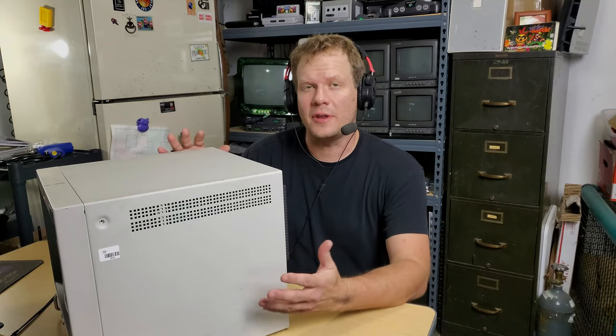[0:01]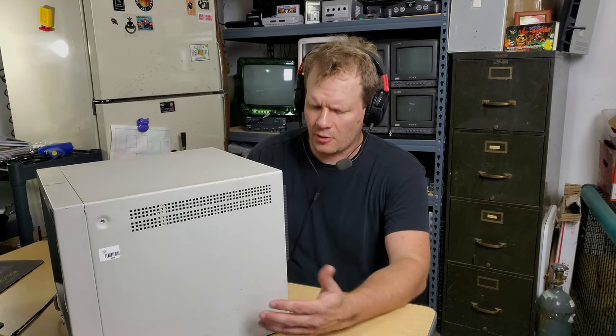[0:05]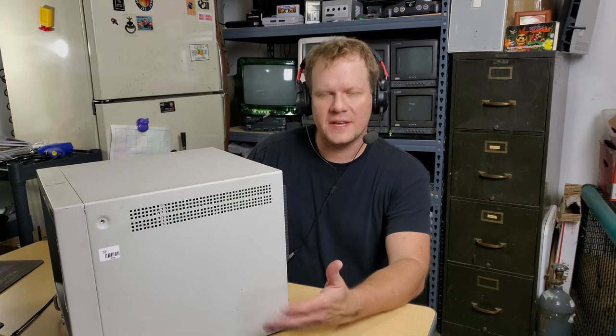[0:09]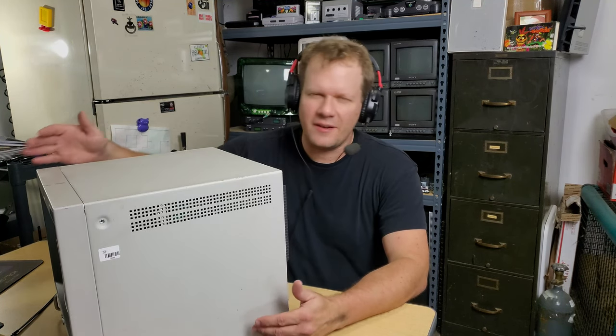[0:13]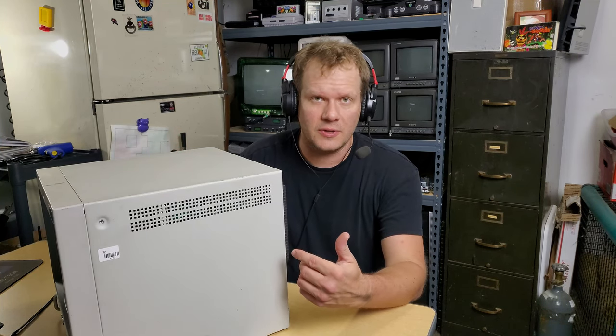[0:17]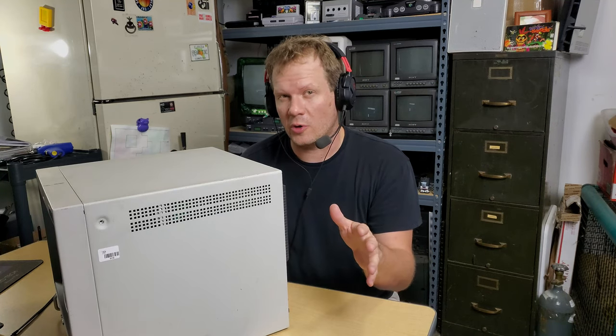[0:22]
This is a Sony PVM 1353 MDU unit, which is a medical monitor, and it is from the mid-90s, 1995, and it will not power on. So instead of just showing you that it won't power on, just take my word for it, because I'll show you how to troubleshoot this and how to hopefully repair it. We can do it all in one quick video. So let's just go ahead and get started.
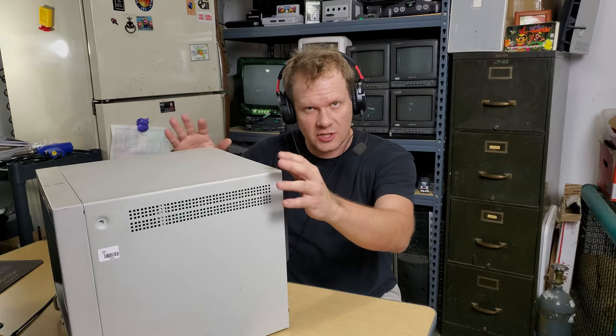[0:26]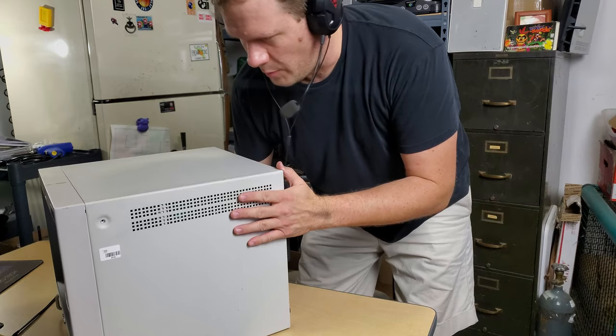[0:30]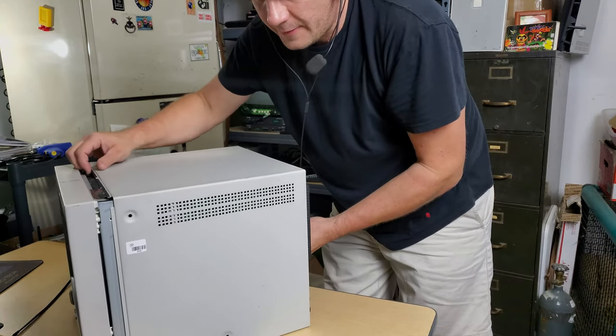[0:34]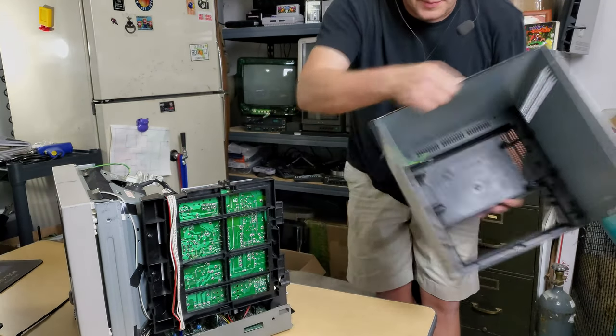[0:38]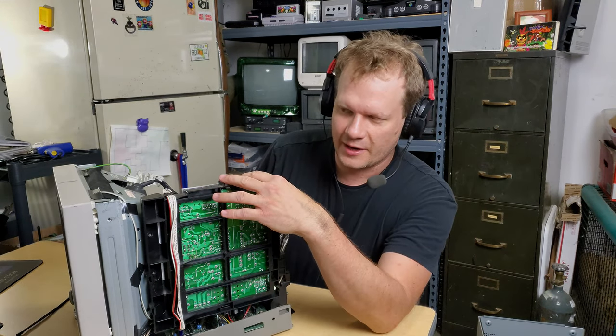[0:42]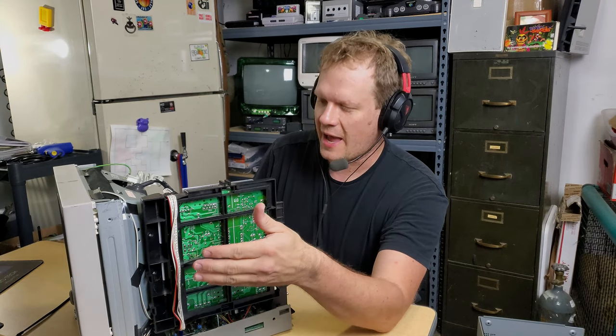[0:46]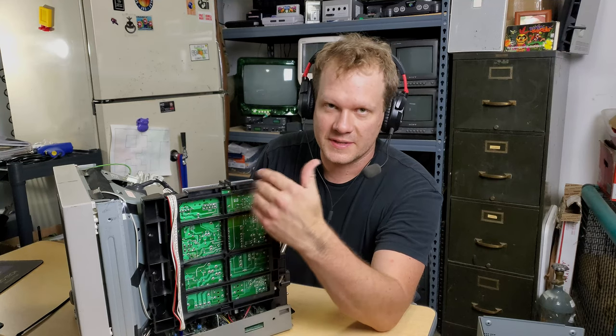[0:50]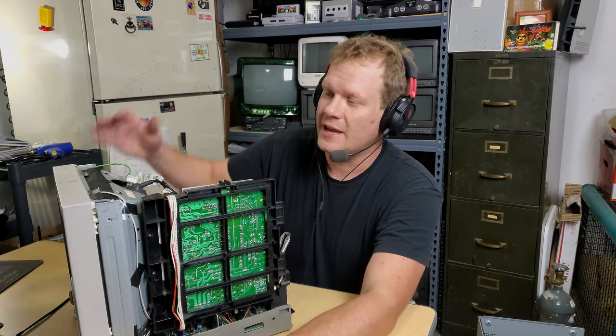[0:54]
First thing I'm going to do is take the shell off this monitor, and I've gone ahead and removed all the screws, so it should just easily slide off, and we'll be ready to start looking at our power supply. And that is this board right here on the left-hand side of the PVM when you're looking at it from the back. Now again, please make sure you've familiarized yourself with the safety precautions and things that you need to do when you're working with electricity.
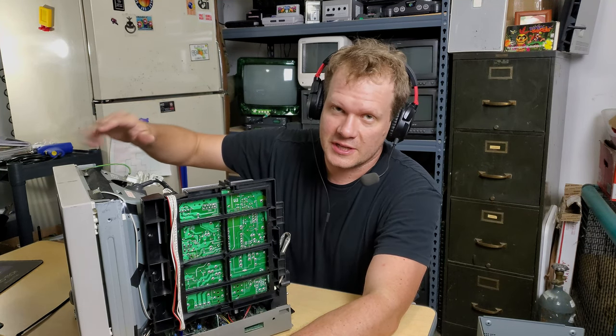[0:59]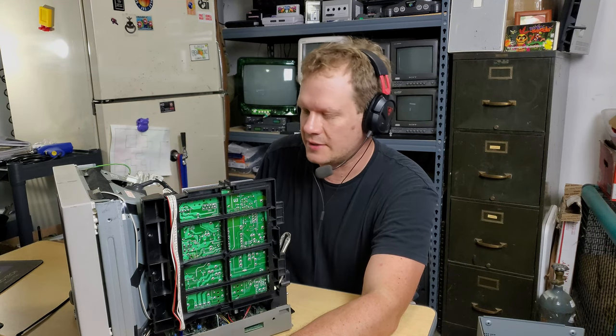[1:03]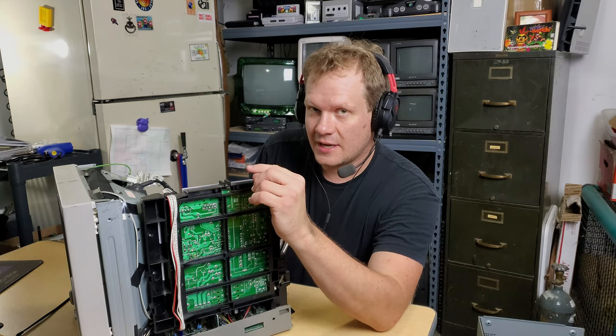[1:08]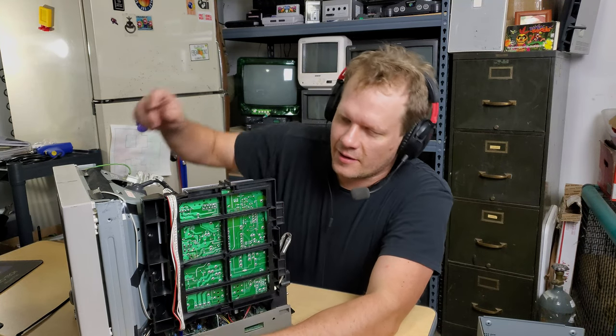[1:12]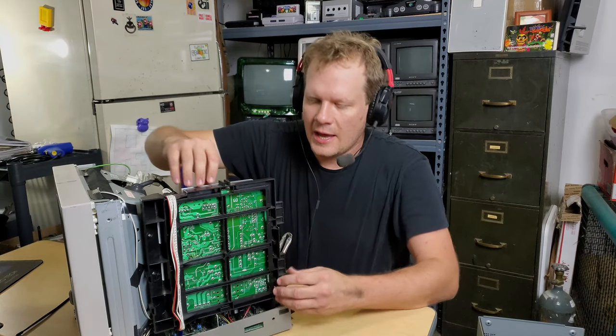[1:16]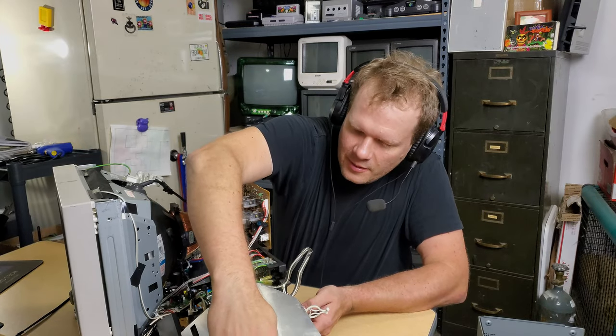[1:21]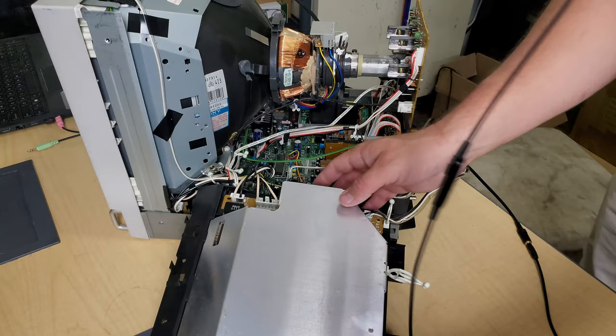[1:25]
Our monitor is unplugged, and we will not be discharging it because we will not be working on the mainframe or anywhere where the anode cap and electricity is charged. But we will be doing some live electrical tests here shortly, so just make sure that you're prepared for that. Now, again, this is our board we're working on. It's generally held with two Phillips head screws over here. So we've removed those screws ahead of time, and now you just slip this board down, and we're ready to zoom in closer.
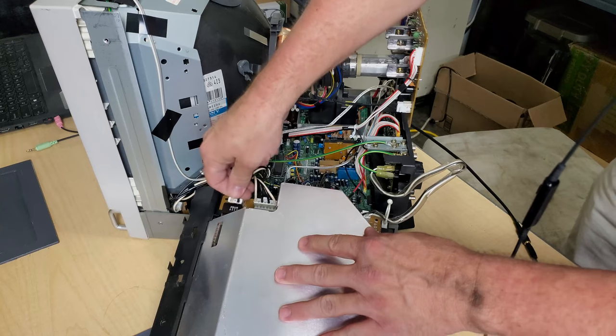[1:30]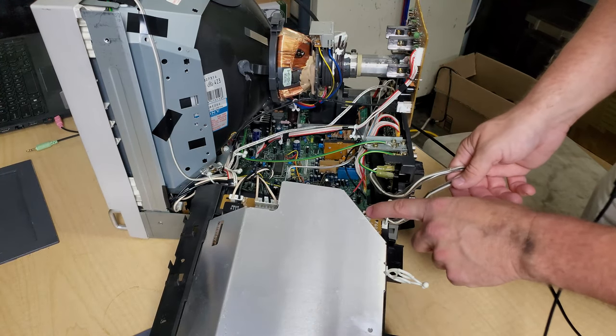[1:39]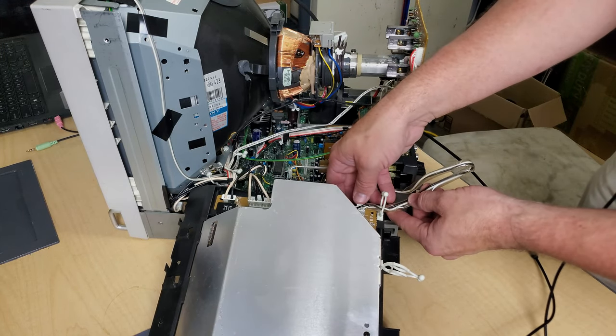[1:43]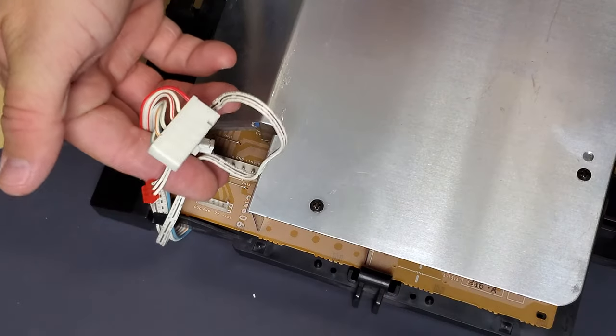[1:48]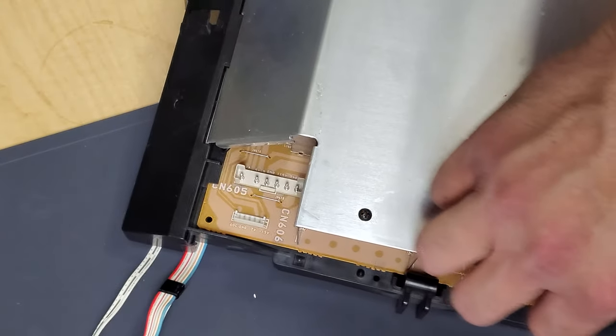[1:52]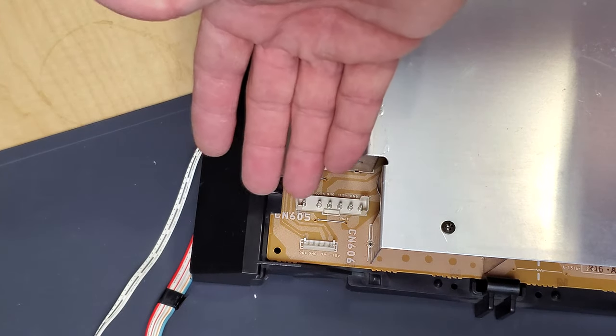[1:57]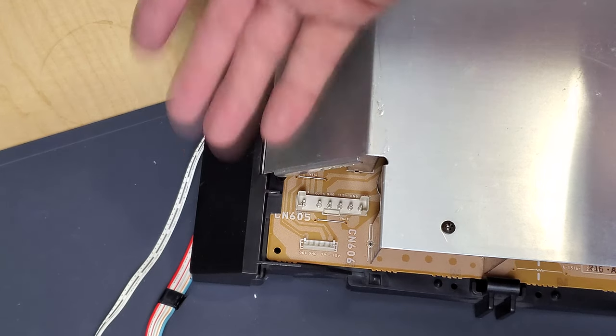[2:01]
All right, here's our main power supply board laid down. What we're going to do is leave these connections over here plugged in. This is our degaussing cable. This is our power button. And then over here is our main plug where our live wall electricity AC comes in, and then it's converted to usable electricity inside the power supply. All these cables right here need to be disconnected and placed out of the way. And those are the areas we're going to be probing to get our power readings and to check our voltage and make sure that we're getting the right voltage out of the power supply.
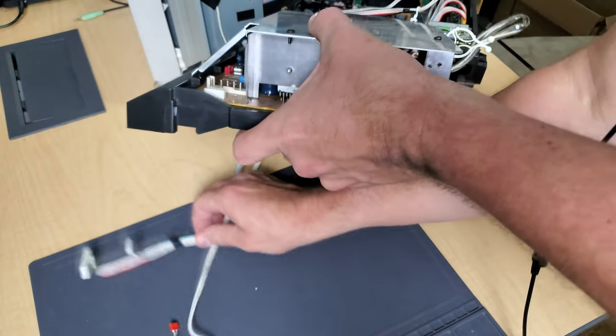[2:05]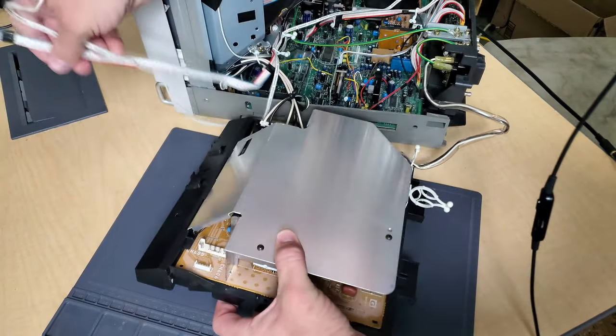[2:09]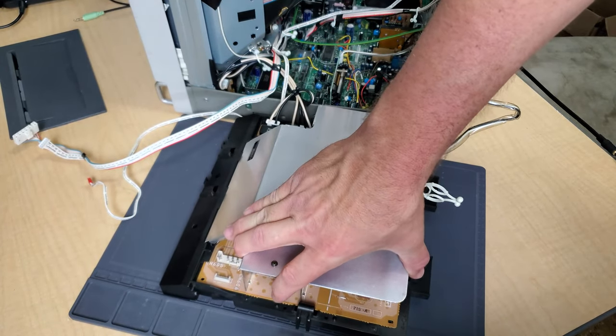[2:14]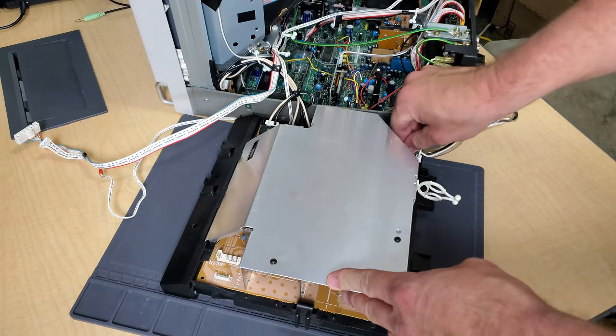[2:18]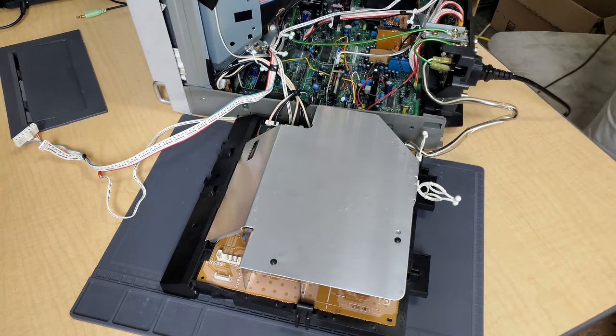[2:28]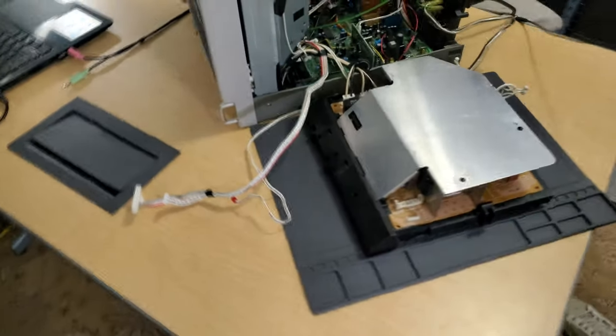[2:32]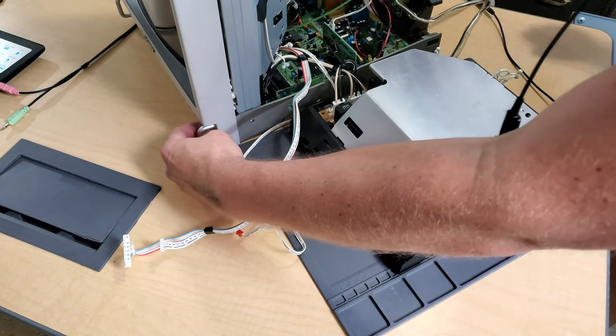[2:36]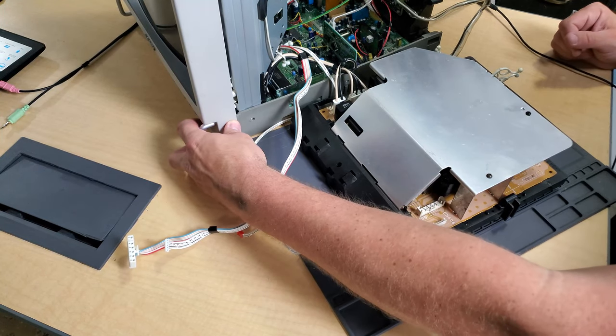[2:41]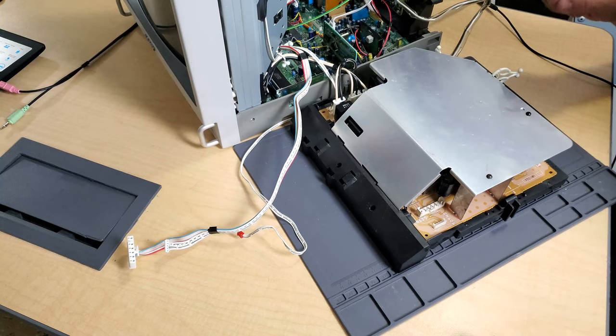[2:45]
Now, in order to safely run the test, we do want to try to get this out a little bit and give it a little bit of room. I've got a safe mat here to place it on, which is an anti-static mat. We'll place that down there, make sure those are plugged in, and then now we're ready to install a power plug. So what I'm going to do now is plug our AC current into the wall, and then we can come around to the front and just press our power button, and you may hear a little click. There's a tiny click. You can hear the power going into the board, but again, now it's all live. If this power supply is in good shape, all these will read the correct voltage. So we need to get our multimeter and run some checks.
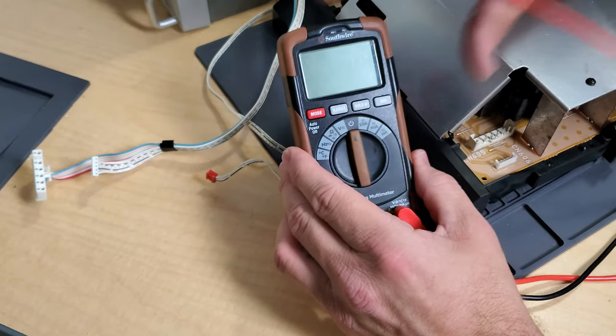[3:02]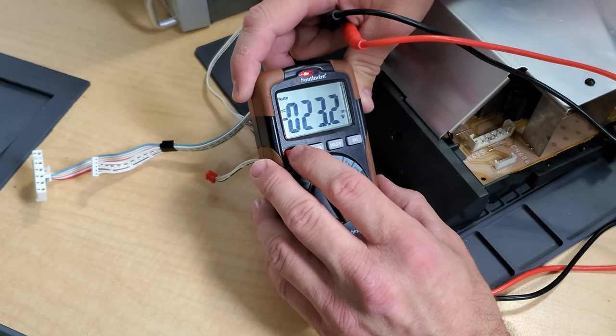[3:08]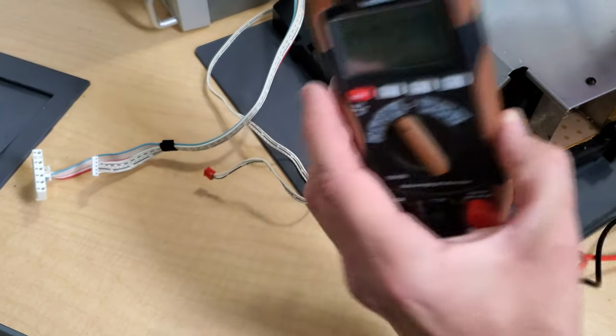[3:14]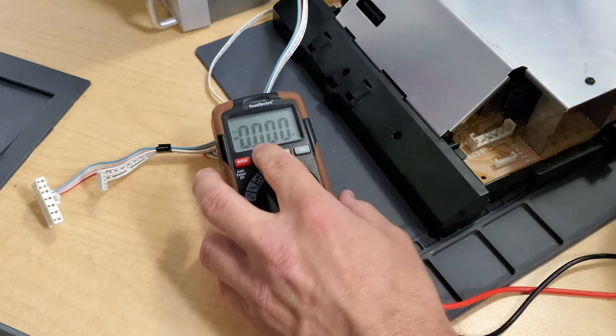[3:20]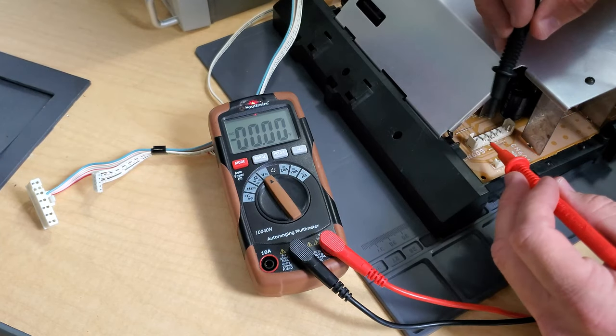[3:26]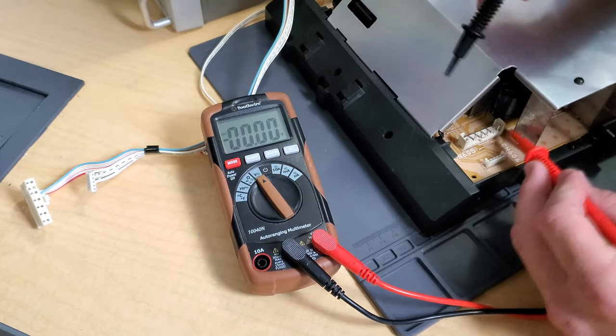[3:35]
All right, we've got the multimeter here, and I'm going to turn it to voltage. I'm going to turn the mode to DC voltage and get it down to the right range. There we go, on DC. And now I'm going to take the negative end and put that on the ground pin. Now they are labeled, so we need to put it on the ground pin, and the very far pin on the left is our 15 volt power. So we're going to go ground and 15 volts. And we got 17 volts, so that's pretty much fine.
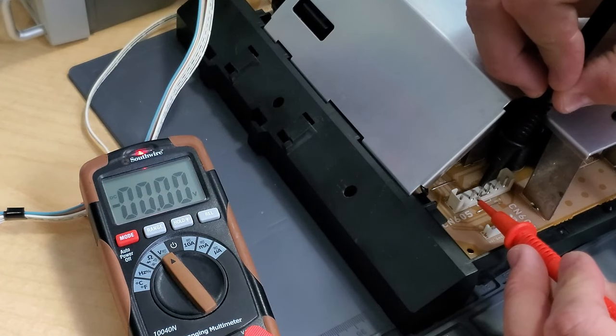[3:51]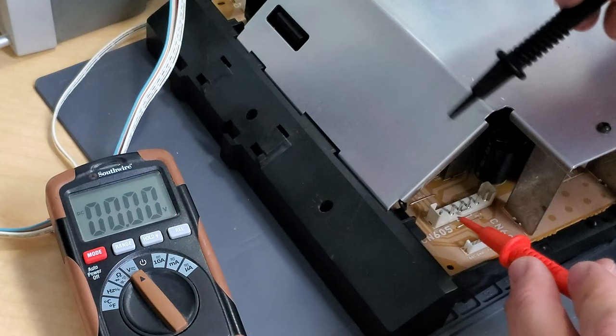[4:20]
And then it's another ground right here. Then we've got two 5 volt lines. So this first one's 5 volt B. We got 5 volts there, so that one's actually good. And then this is 5 volt A. Oh, if you could see that on the meter, we've actually got 0.078, and that should be reading close to 5. So that's our problem. We're not getting our 5 volt A off this. That's our guaranteed problem.
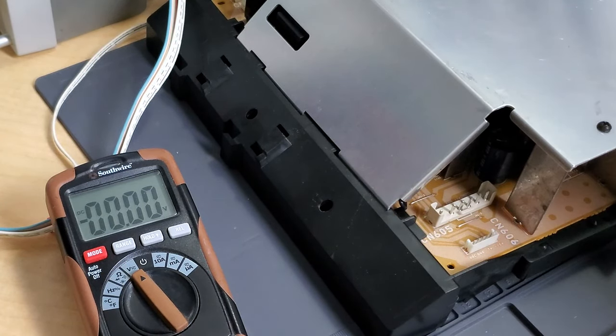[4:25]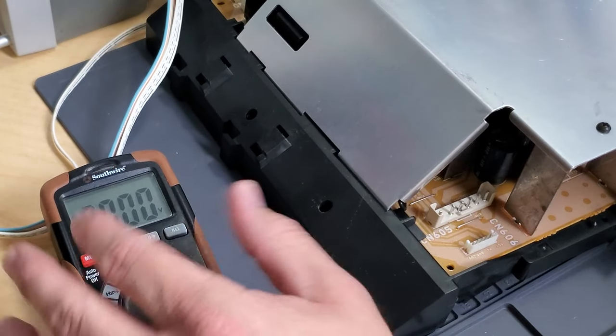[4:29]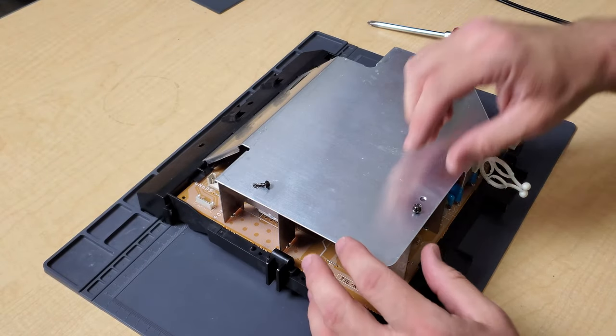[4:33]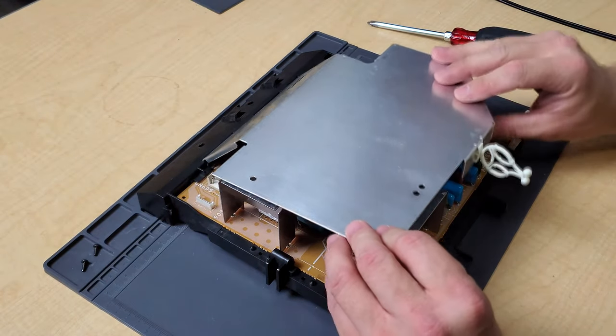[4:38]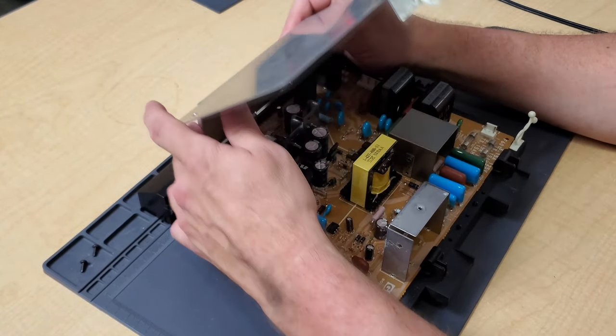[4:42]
So let's take a quick look at the schematics. And we'll have to do some more work to figure out what's causing that, what components on the 5 volt line could be out. Let's take a closer look at the power supply. There's two screws holding the shield on. And all you need to do is lift and pull that a little bit towards you when you're on this side, and it'll just slip out.
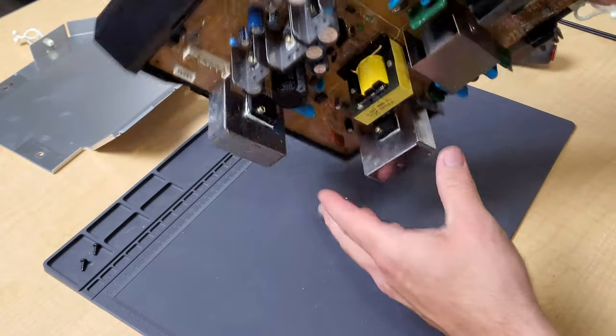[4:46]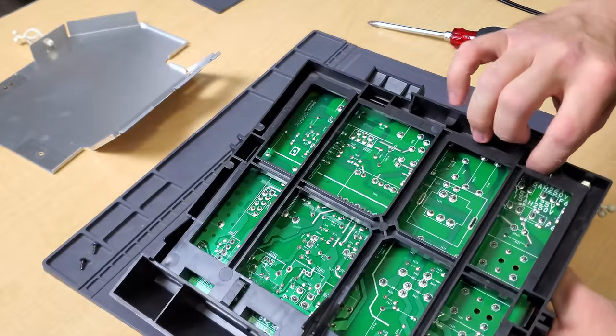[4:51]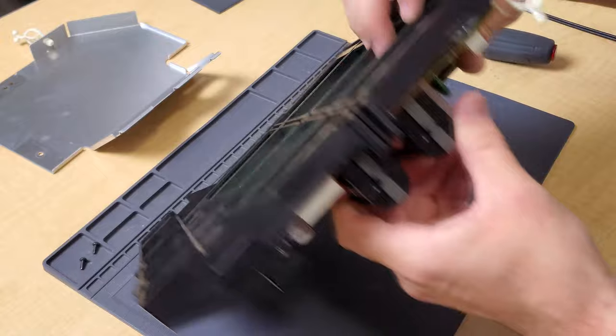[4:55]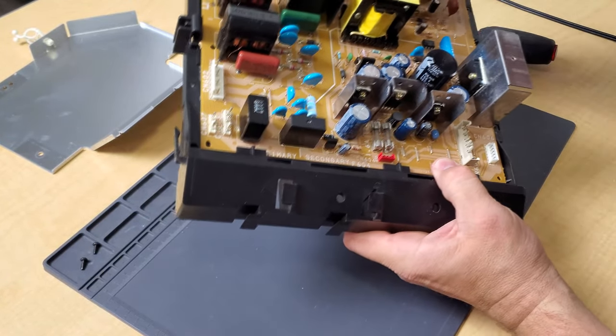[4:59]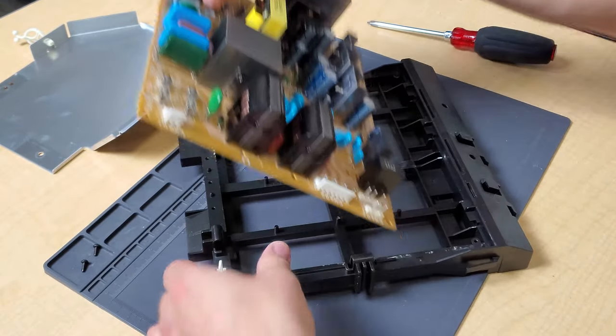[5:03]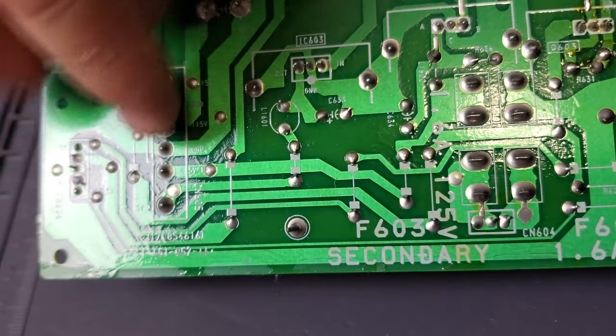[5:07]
And the board can pop out too on these tabs. There's tabs. Push all those tabs, it'll lift a little. We should be able to just slide it towards the back side here once we get all those tabs pushed. There we go.
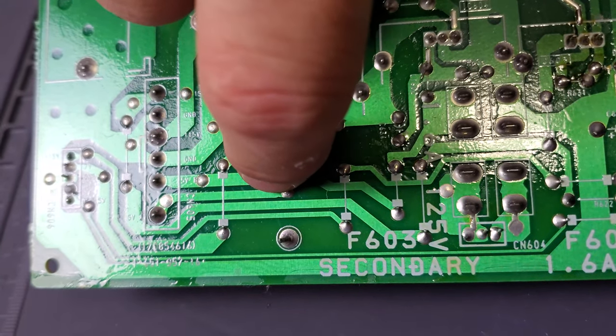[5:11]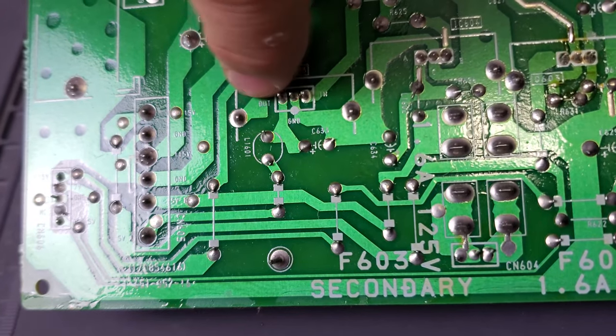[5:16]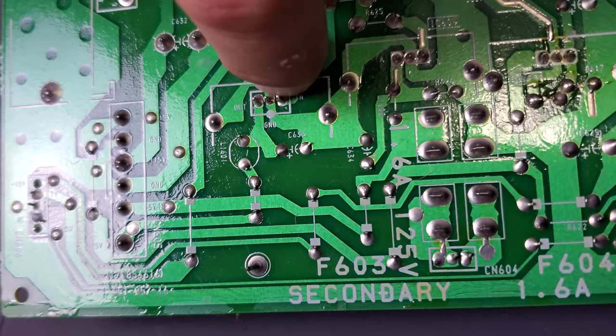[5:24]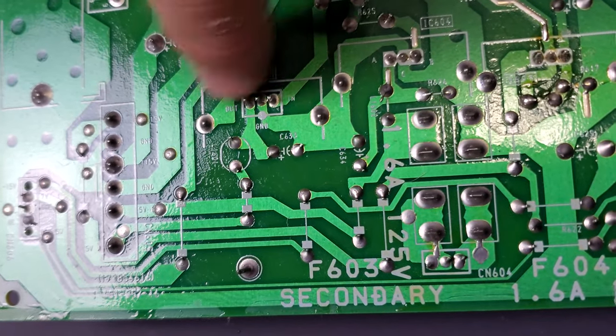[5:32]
All right, look at something with me here real quick. This is the 5-volt A pin. If I look at it, it traces over to this point and jumpers over here, hits this inductor, and then it hits this 7805 regulator here, IC603. So what I'm going to do is pull this out and remove it, and then we can test it and see if it's actually shorted or failing. And if it is this part, I've got one here in the shop, and we'll replace it and hopefully get 5-volt power out of it.
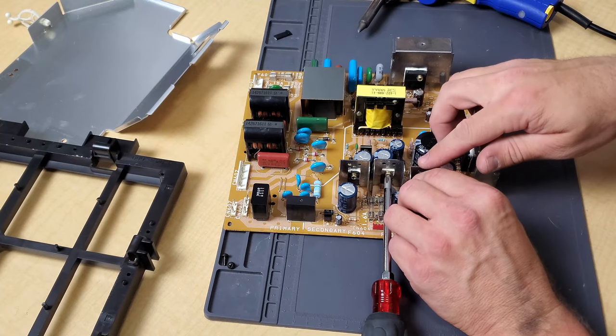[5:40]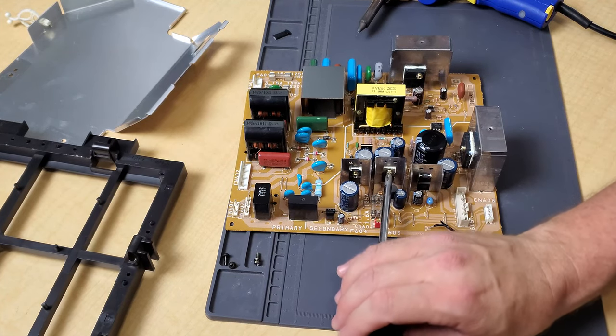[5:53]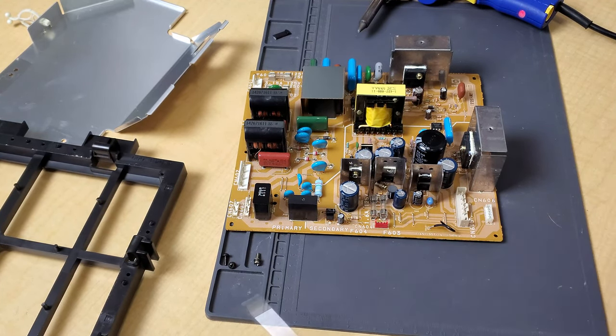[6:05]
I traced our path, and it looks like there's a possibility that it could be either of these 7805s, because the current will go from this 7805, and it does connect to one of the legs on this one. And this is such a cheap part that we can go ahead and replace both of them. And even if one of them is still good, it's kind of a little bit of preventive maintenance.
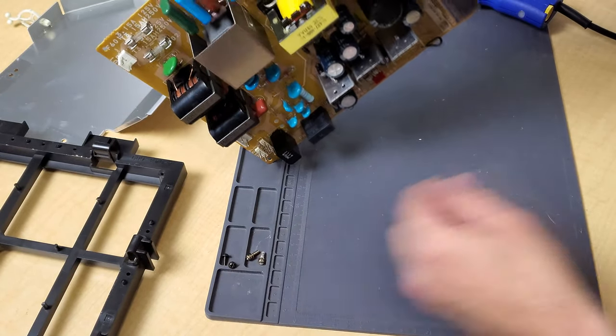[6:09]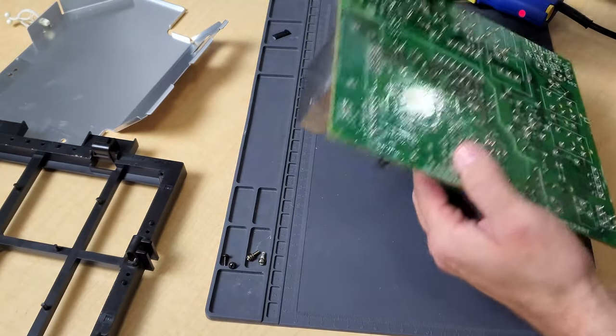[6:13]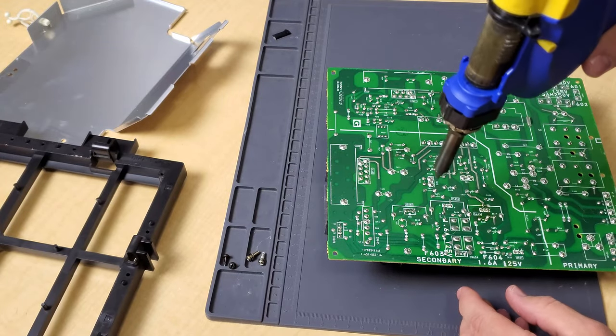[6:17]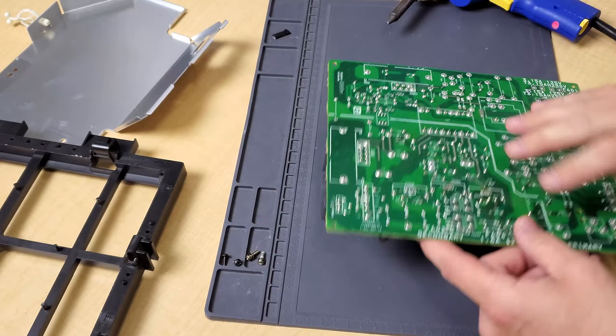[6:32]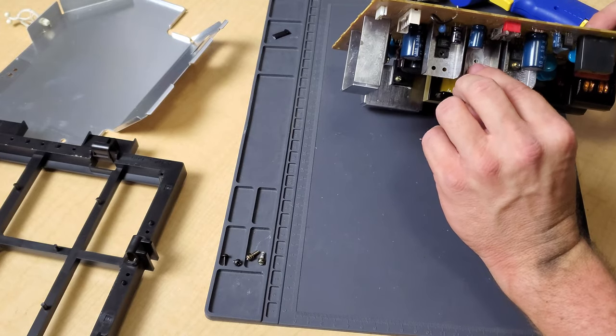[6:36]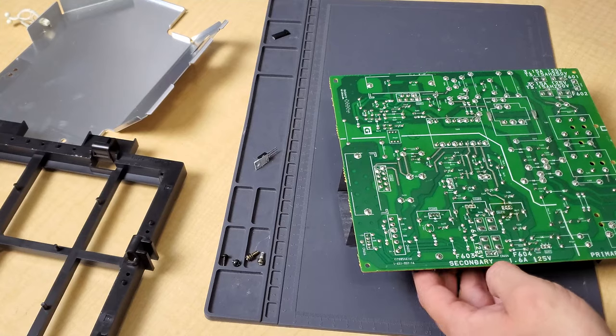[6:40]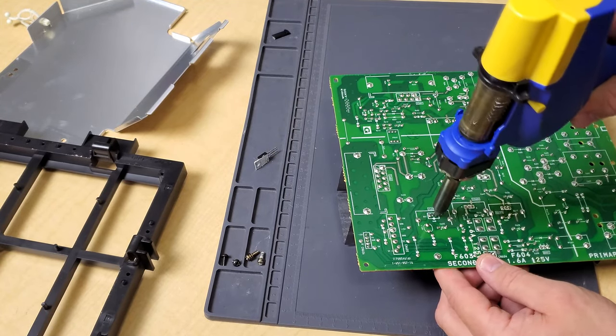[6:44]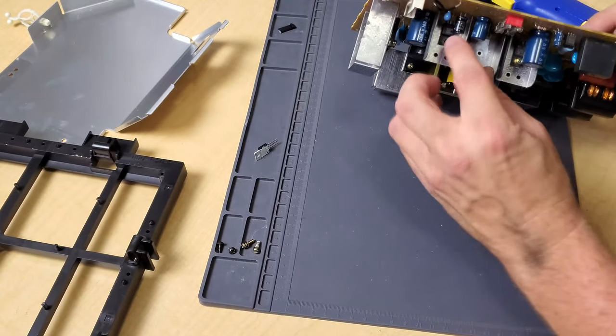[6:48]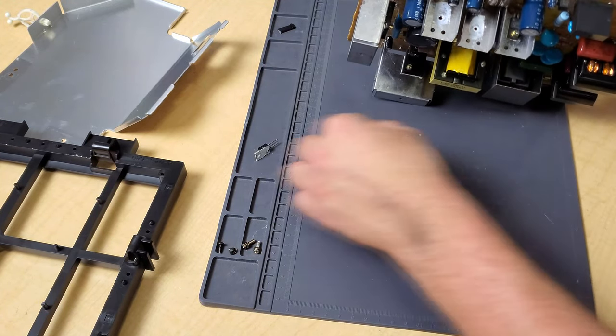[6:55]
The first thing I like to do is remove that screw that holds our parts to our heat sinks. And then we're going to flip it over and desolder. I'm going to desolder both IC603 and 604 and replace them. So four, yep, slide out of there nicely, and then let's get 603. All right, slides right out.
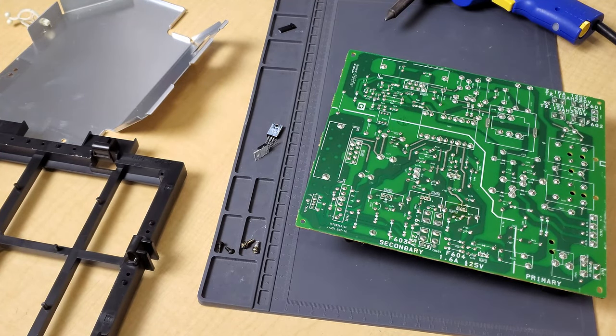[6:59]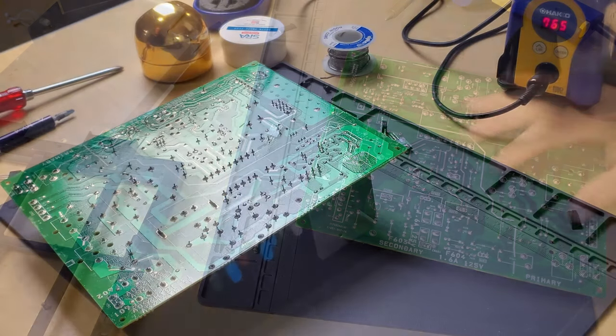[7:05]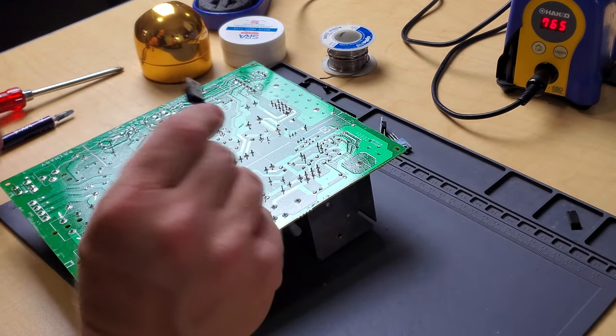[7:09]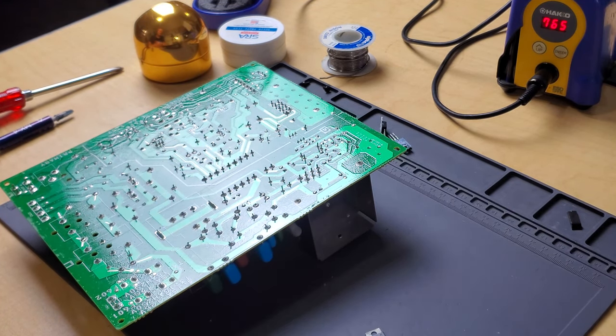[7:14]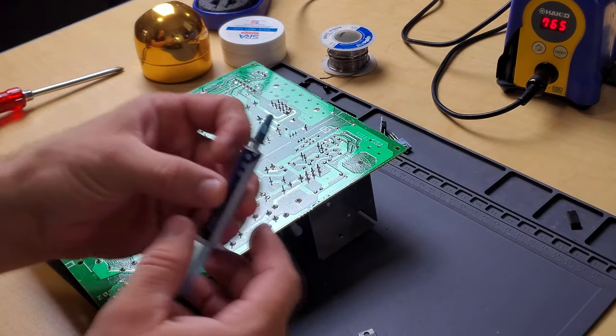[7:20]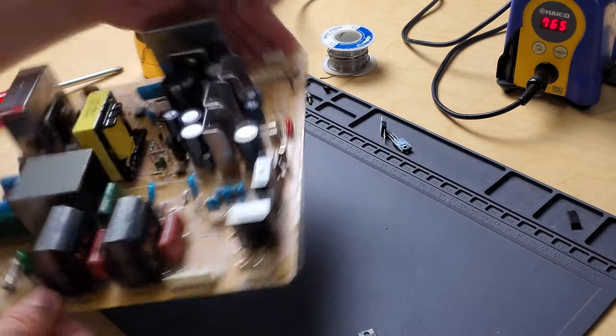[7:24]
Now we'll just get some fresh 7805s and get them ready to install. Let's get working on this board. Here's just my standard 7805 replacements, transistors, or regulators. And we're going to install both of them in IC604 and 603. I've also got some thermal compound. We don't need very much of this at all.
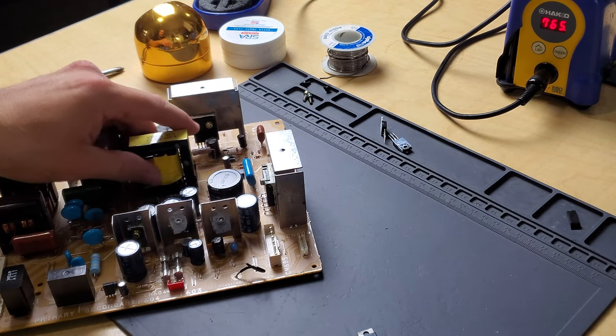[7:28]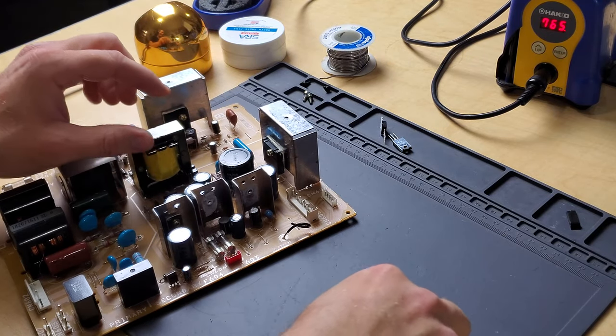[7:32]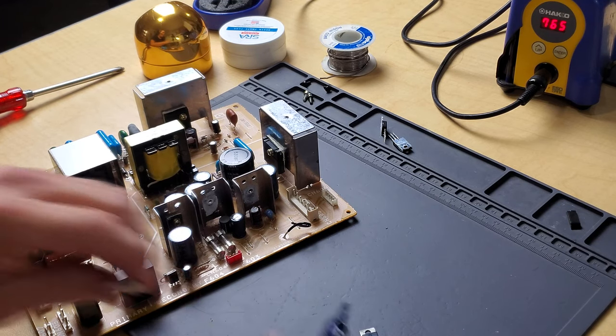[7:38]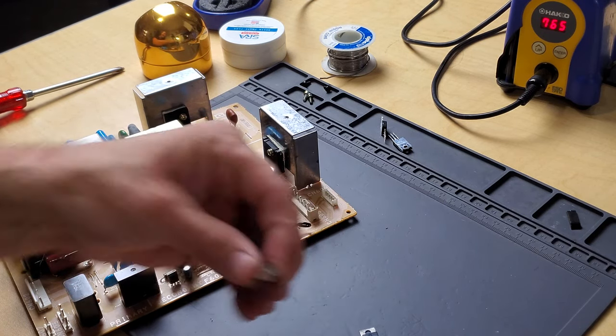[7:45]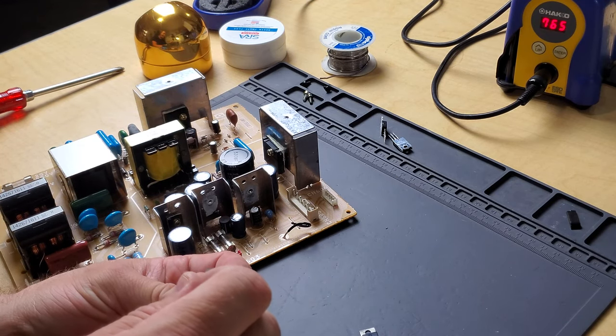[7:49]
Please remember that when you're using thermal compound, it's pretty much just to make sure that the plate on the component has a good surface area contact with the whole heat sink. That way the heat dissipates properly. So you don't need to add a ton of this stuff on there. You really just need a very light amount, enough that it can get all over the plate. That way it'll work most effectively. But you don't want to add a huge glob. You can even use those two parts a little bit to even some of that out. Adding too much will actually not help any and is just kind of a waste. It's kind of expensive.
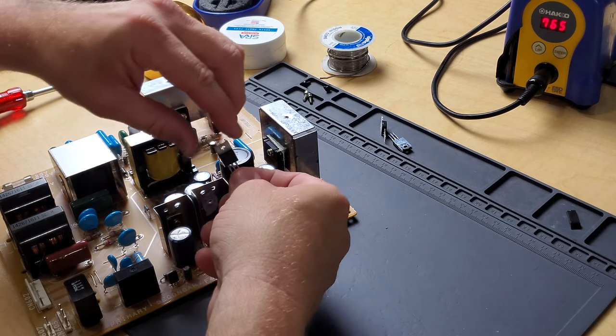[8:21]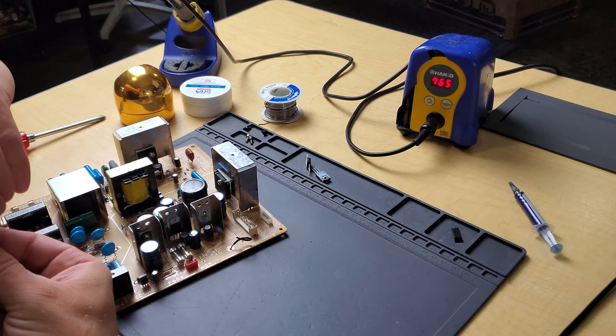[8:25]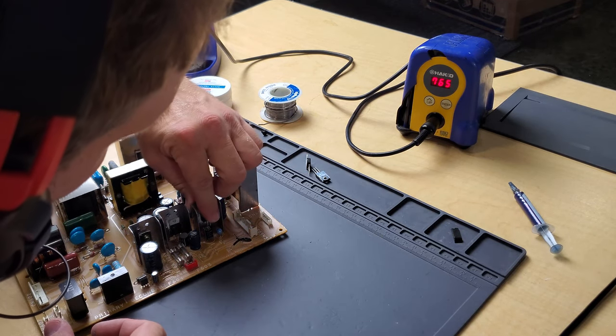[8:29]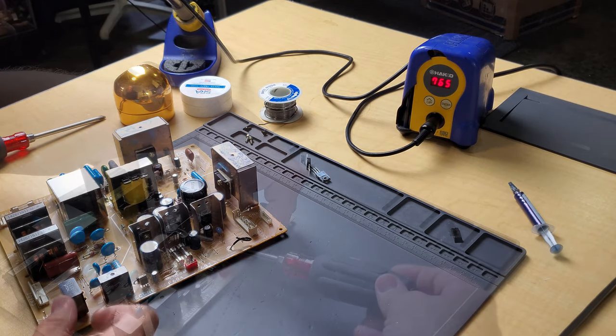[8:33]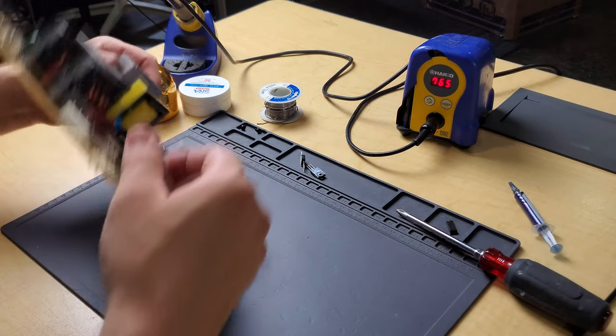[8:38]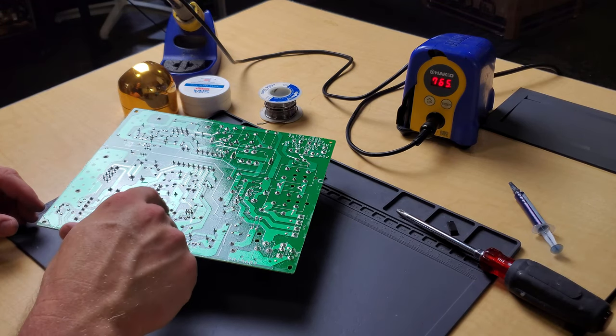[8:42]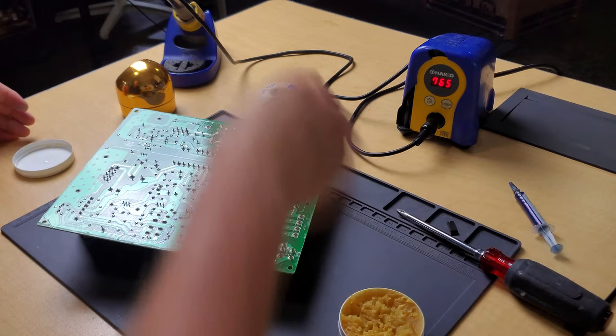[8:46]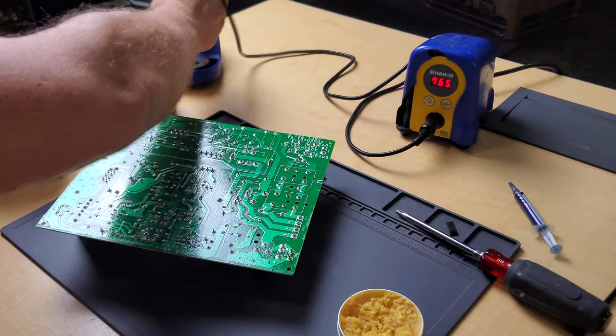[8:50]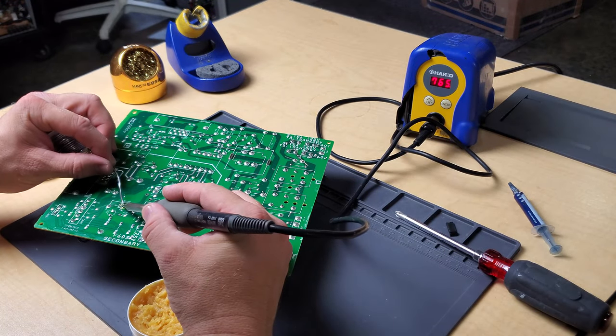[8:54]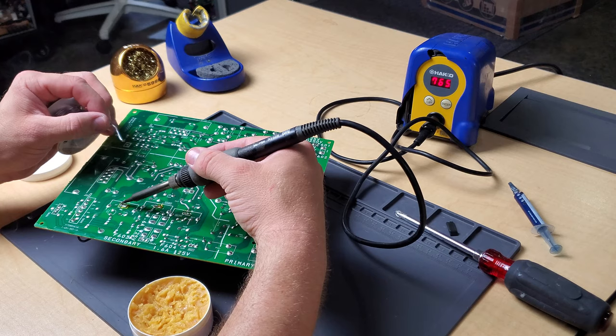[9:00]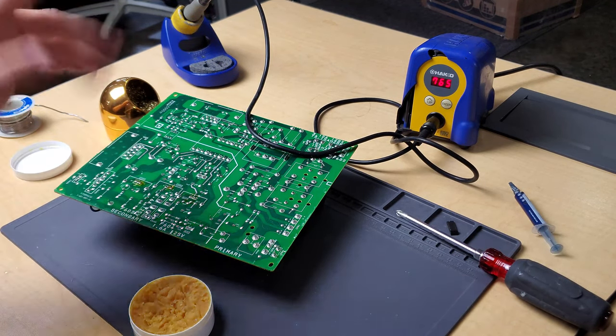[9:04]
But what we'll do is we'll get both of these in here, slide them down in there to start with, and then we're going to screw them back in first and solder the legs in second. All right, both those are attached to the heat sinks. Just flip it over, and we'll solder in the six legs. Got my flux and rosin core solder here ready. I'm just going to clean off my flux residue, pop this in, and see if it tests up.
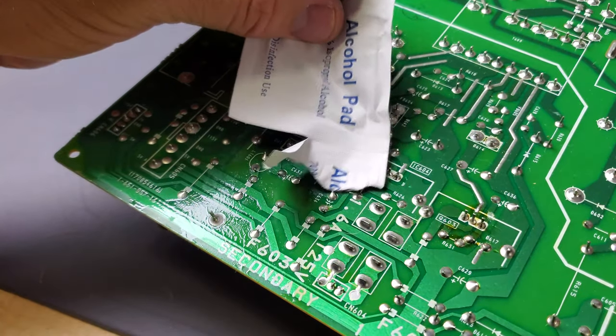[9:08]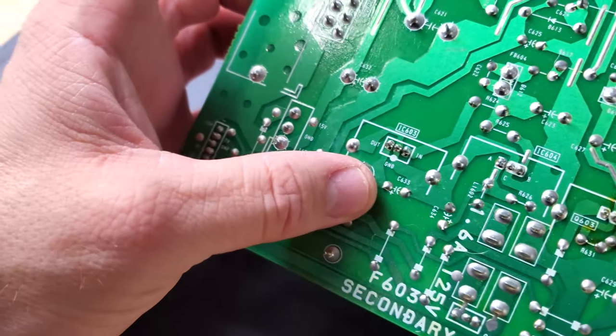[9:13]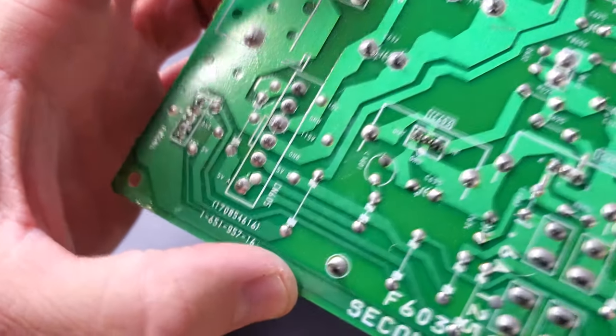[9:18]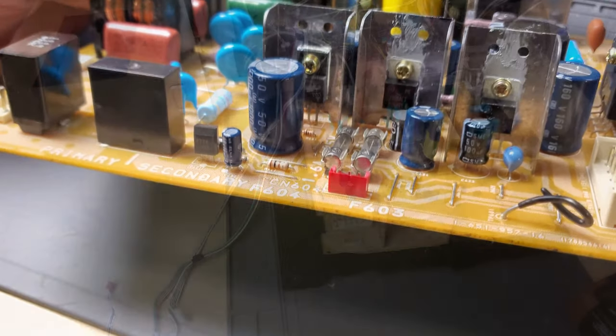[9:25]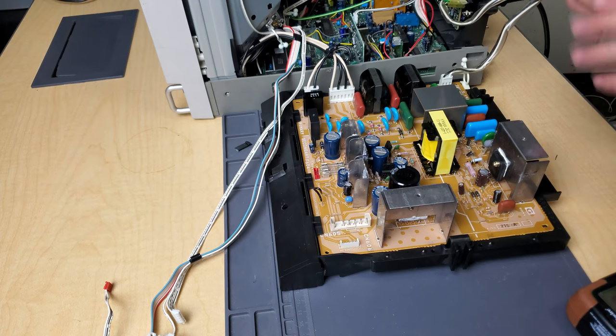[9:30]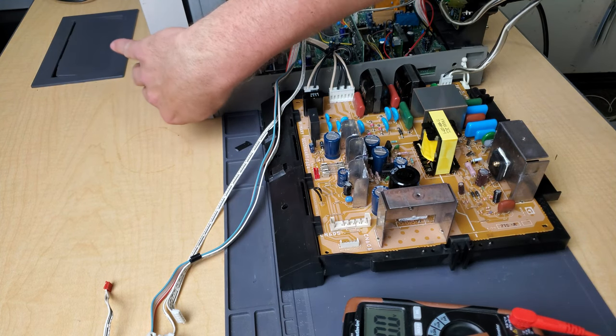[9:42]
We've used some alcohol pads and cleaned off our flux residue. That's our solder joint on IC603, 604, pretty clean. And if we flip it over and inspect this part, we're good. All right, here's our power board. It's been reinserted. We've got power going in. All I've got to do is turn the power on, and then we can run our 5-volt test and see if we get 5 volts. I've got the meter here. And let's go ahead and do it without any more waiting.
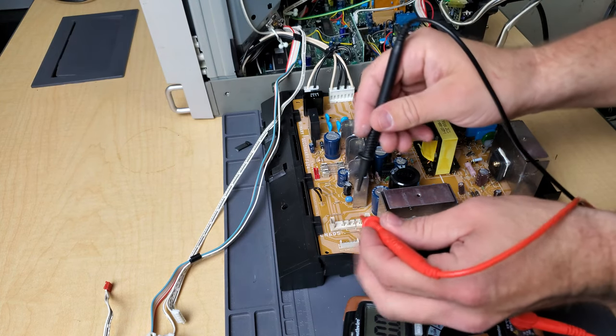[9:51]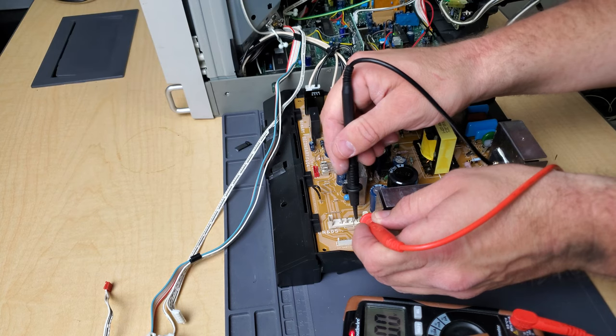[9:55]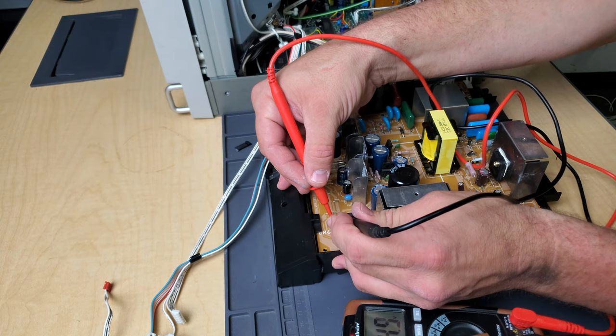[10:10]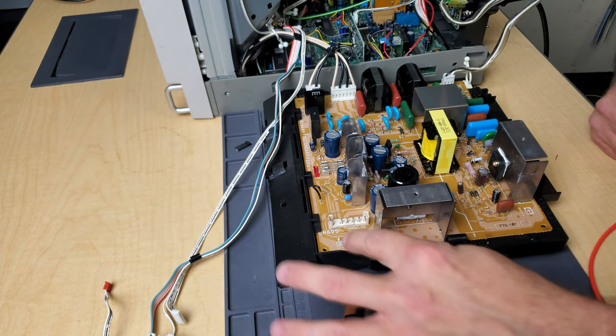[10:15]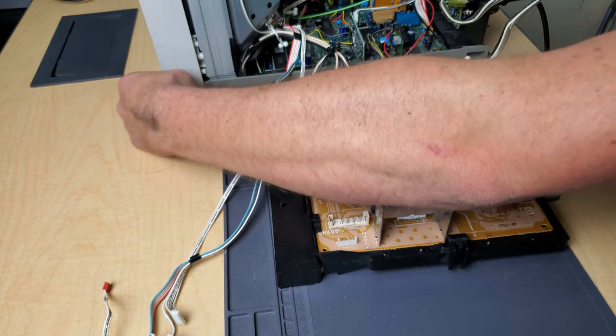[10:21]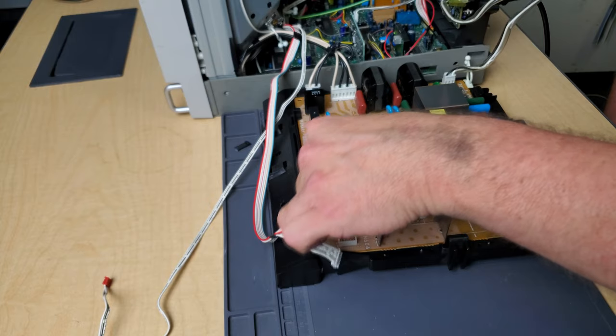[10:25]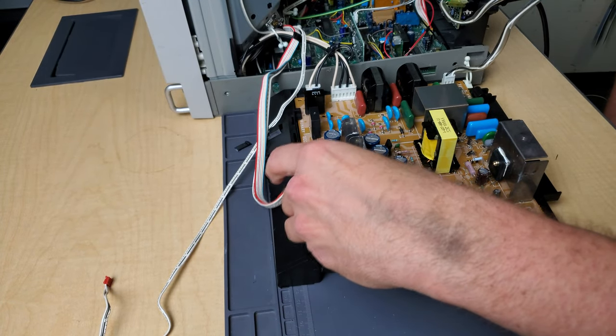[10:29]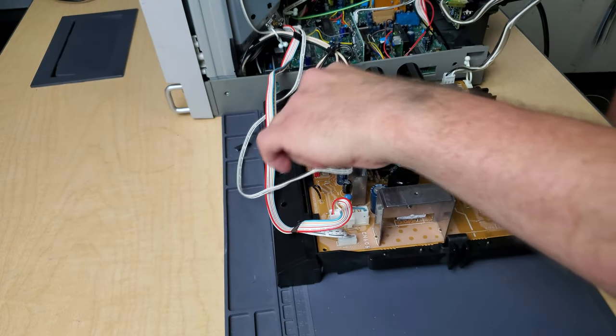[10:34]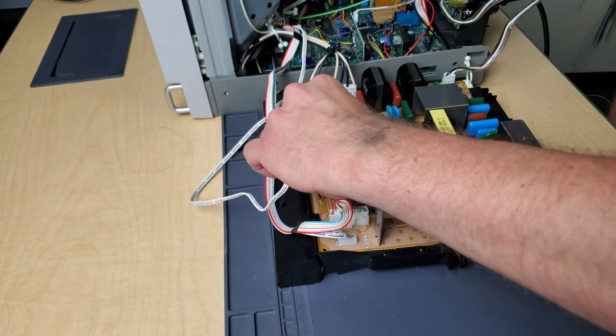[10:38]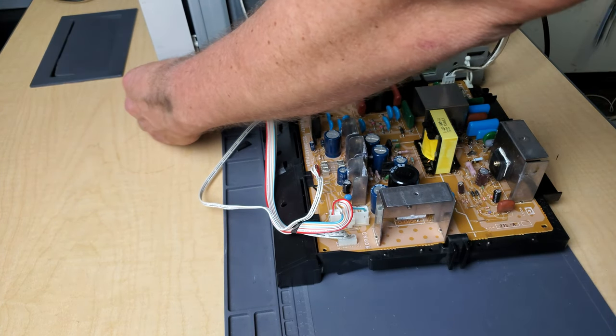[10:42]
Activate the power, and let's recheck our voltage. First, our 15 volt. 17's reading. Let's check the other ground pin. 4.9 on 5VB, 5VA. 4.9, perfect. So now we're getting our 5 volts coming out of the A. That means that I should be able to simply power the monitor off. Then for a final test, we will plug in the board connectors, and I'm just going to power it on and look at the screen right away. Let's see, should work.
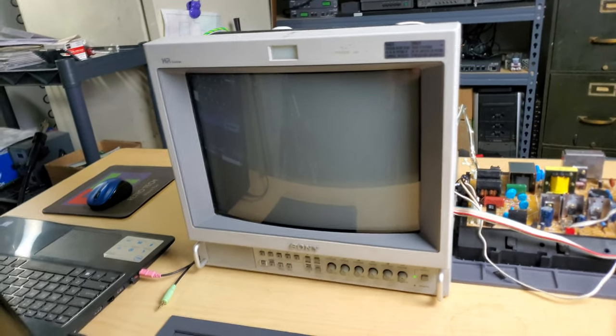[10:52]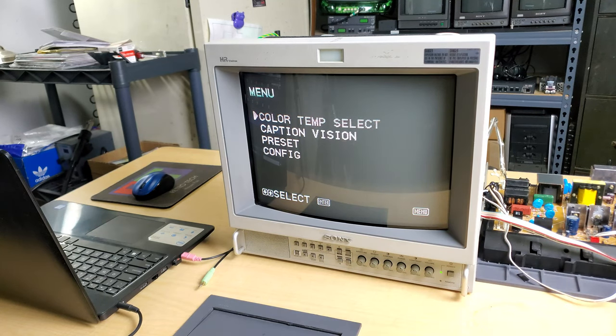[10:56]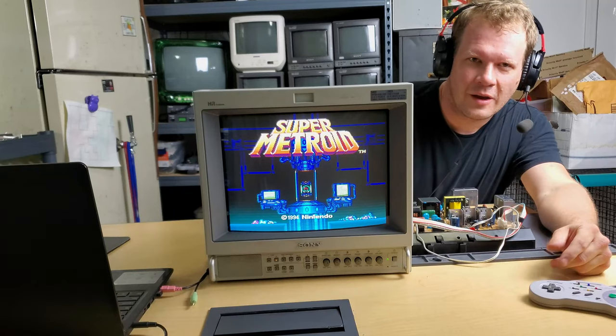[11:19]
All right, we've got power on here. Wow, so there you go. You get all the voltage right, and if the rest of the monitor is in good shape, it'll work. Let's get something that looks good and throw a picture over in this, some kind of video game or something. Ooh, it's hot in the lab today, man, goodness. But this is definitely working good. It's been running for a little bit. I've got some Super Nintendo going into it right now.
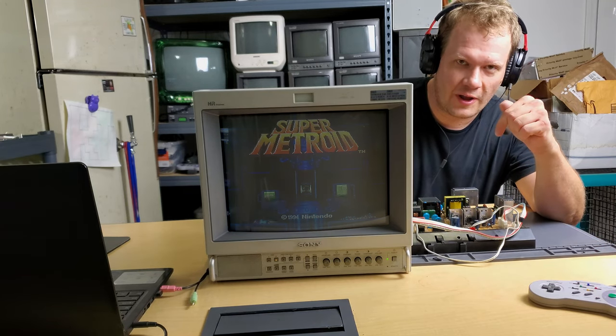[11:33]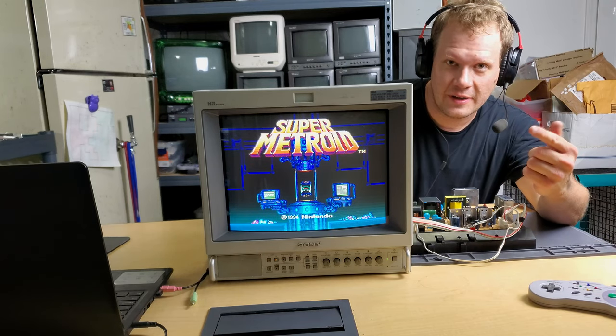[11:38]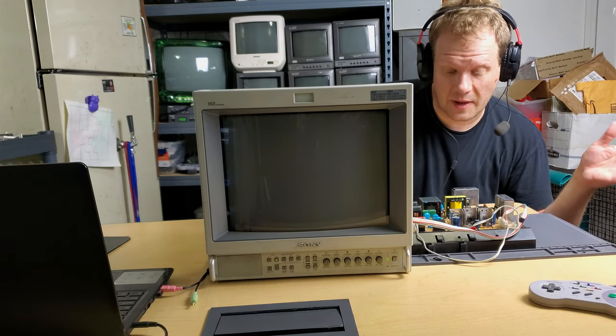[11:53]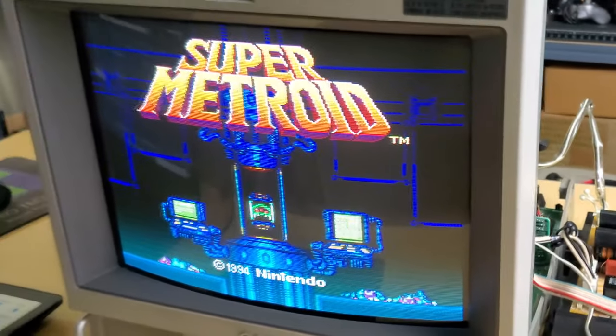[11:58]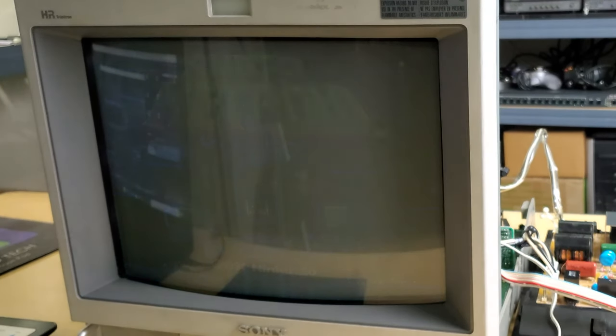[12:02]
So just let that be kind of a key to you on this power supply. That's how you need to troubleshoot it. If you're not having power into your PVM, then do what we did here. Unplug everything, get your power supply out, and then probe your board right here after you send a little bit of power back into it to see if you're getting the right power. Some of these other things may be wrong. If you have a 15-volt power problem, it's more likely one of these larger ICs that's got, you know, like 7 or 8 legs on them.
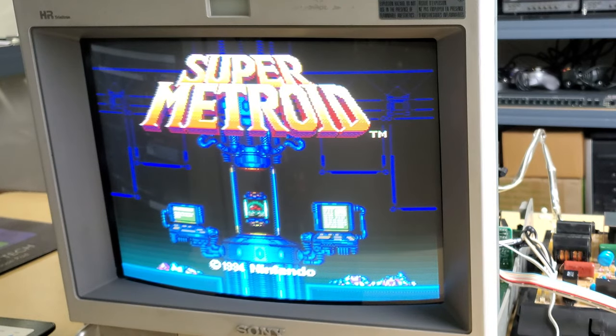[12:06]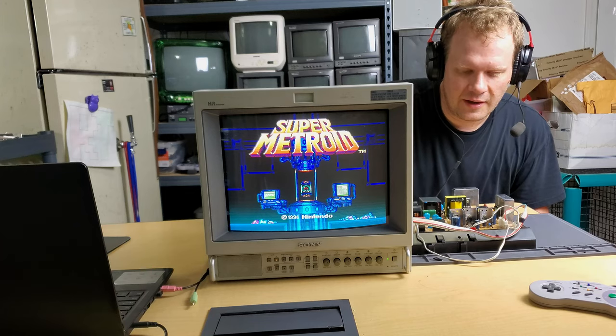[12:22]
And there's also a possibility it's the capacitors, but I've had a lot of discussion with Save on Pat, and he told me that more often than not, it is the 5-volt regulators and the other regulators and things on the board that fail out. And so that's an easy fix, pretty cheap too. And now we've got a working power supply and a working PVM.